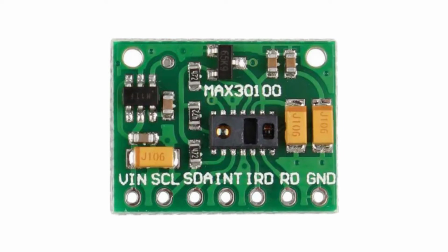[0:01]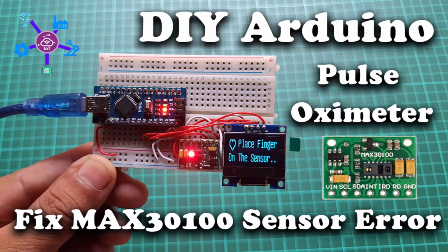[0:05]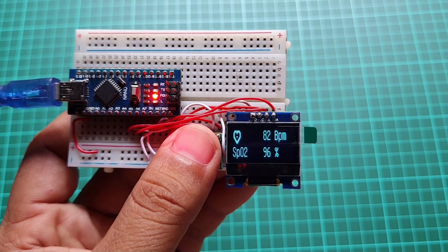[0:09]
Today in this video, we are going to fix the MAX30100 sensor issue and learn to DIY a pulse oximeter using Arduino.
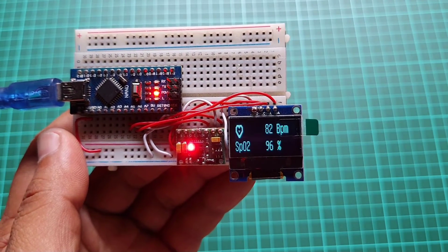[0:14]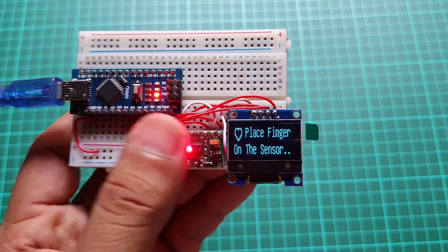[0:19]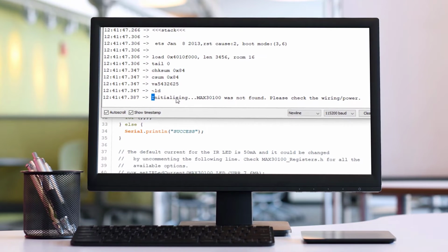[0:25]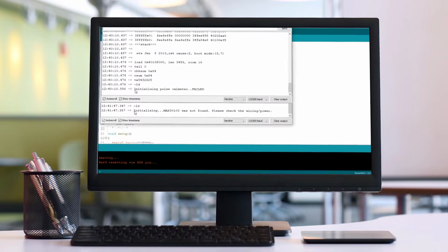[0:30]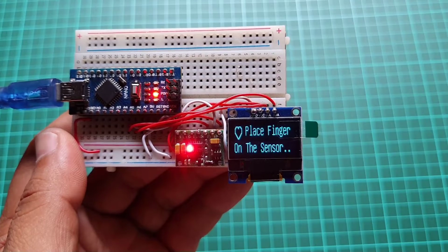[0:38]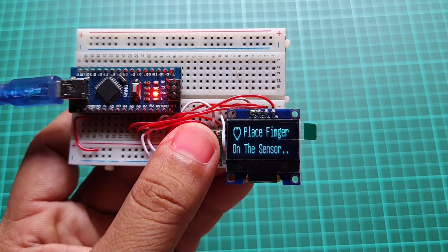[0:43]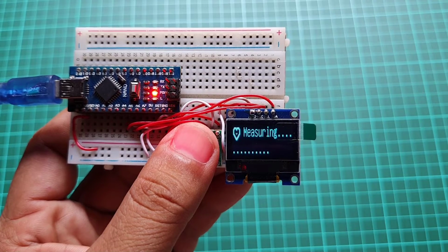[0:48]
You might have faced no red LED light working even after following proper pin connection and program code. Or you might have faced "Initializing pulse oximeter failed" or "Initializing MAX30100 sensor was not found. Please check the wiring or power." If you see these errors on your serial monitor and want to learn how to fix them, then you are at the right place. So here we are going to fix MAX30100 sensor issues and DIY a pulse oximeter using an Arduino microcontroller.
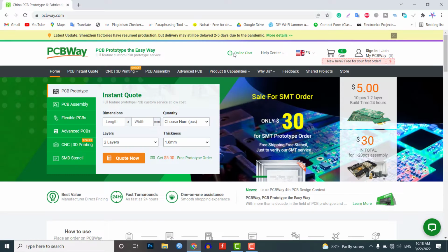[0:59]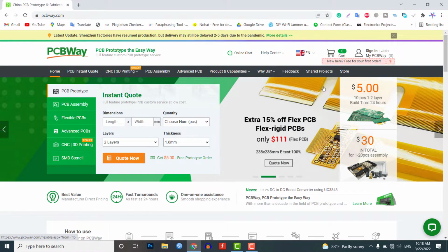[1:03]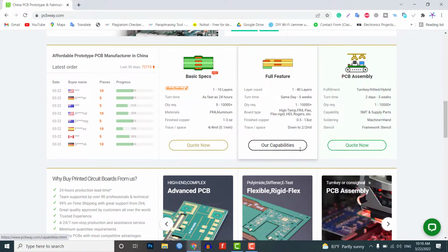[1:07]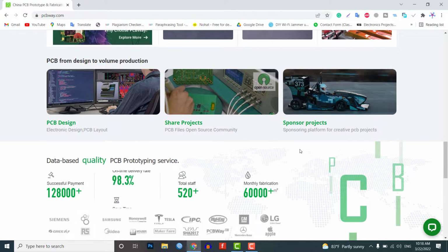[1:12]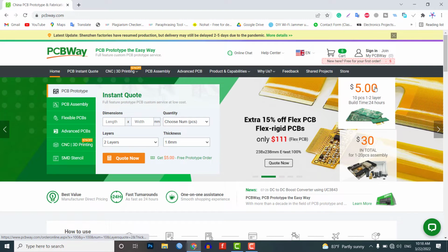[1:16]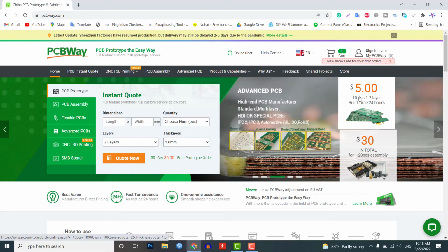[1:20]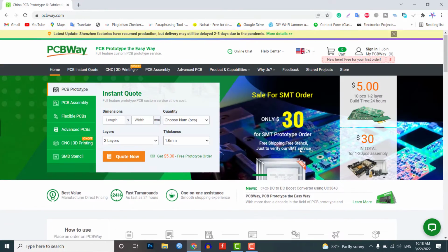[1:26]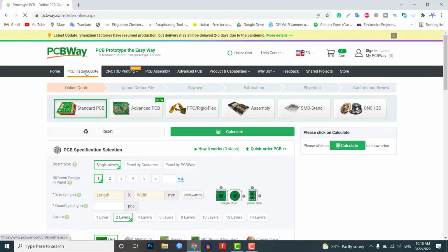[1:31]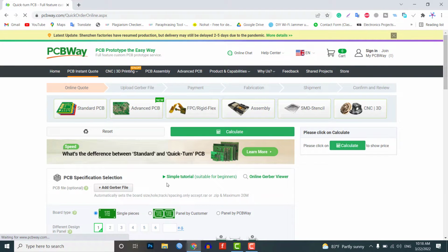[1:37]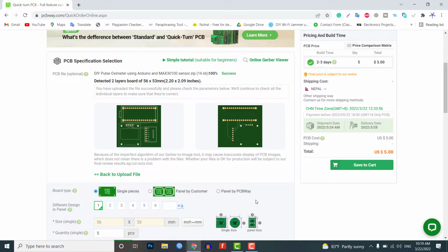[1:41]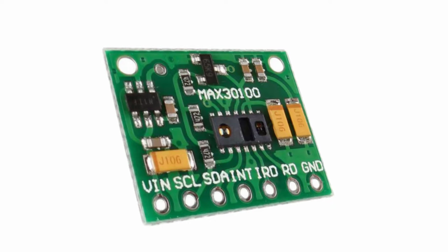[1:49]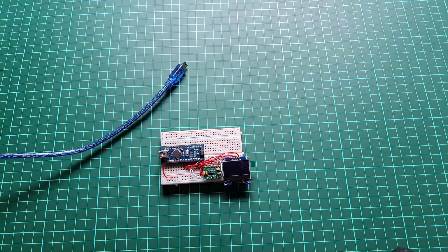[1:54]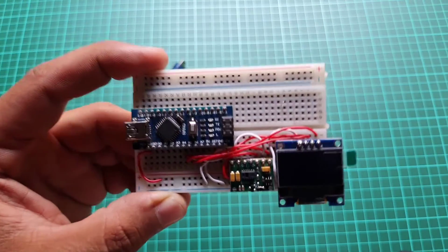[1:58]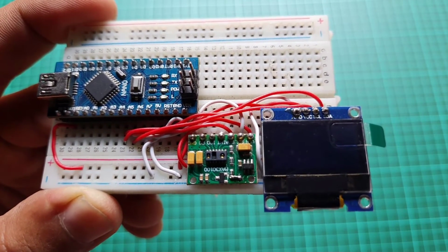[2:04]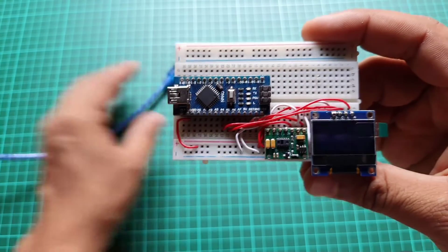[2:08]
So without any further delay, let's dive into this project. There is no issue with the code and Arduino pin connection. I'm sure you have already verified the MAX30100 pin connection with Arduino and they are in proper order. You also might have tried different example code. So there is a small build problem with the MAX30100 sensor PCB.
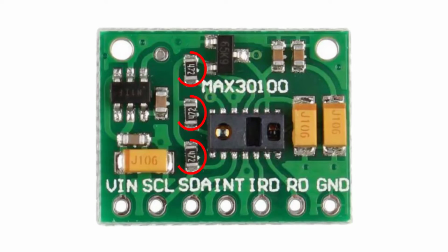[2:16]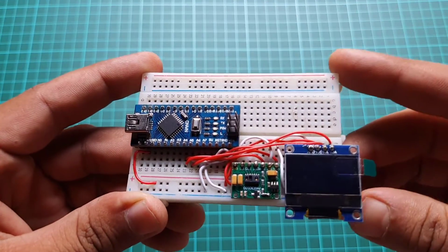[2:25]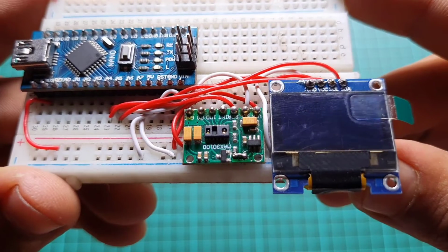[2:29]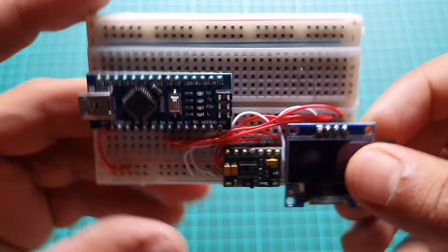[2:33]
If you look closely at the board, you will see three pull-up resistors connected to the 1.8 volt pin of the voltage regulator for a pull-up. But our microcontrollers are 5 volt or 3.3 volt based. So these pull-up resistors are making the SDA and SCL data lines neither pull-up nor pull-down.
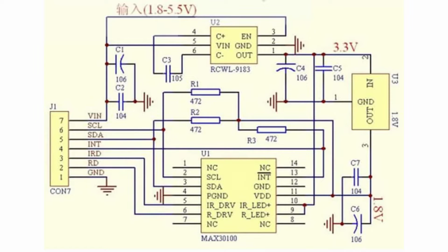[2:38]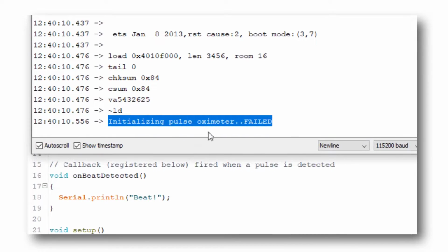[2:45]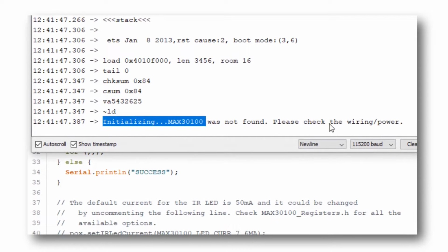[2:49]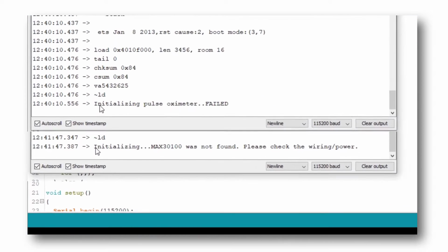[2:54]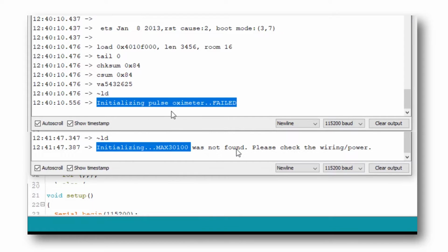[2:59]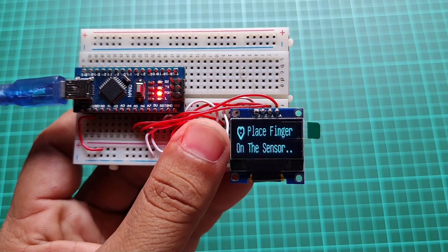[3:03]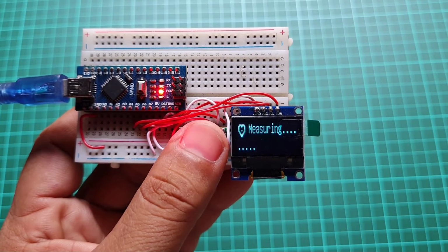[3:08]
Because of this connection, the data which is sent from the sensor to the microcontroller is corrupted and we are getting error responses like "Initializing pulse oximeter failed" and "Initializing MAX30100 was not found. Please check the wiring or power." It happens because the sensor can't communicate with the microcontroller. It will never receive a command to read the pulse and oxygen level, so the red LED will never glow.
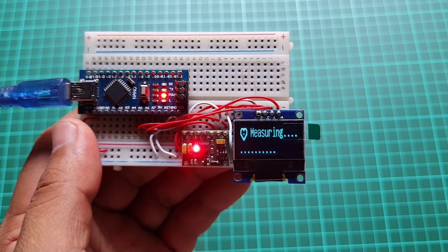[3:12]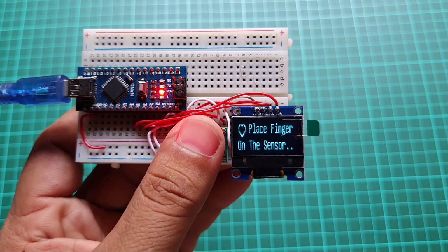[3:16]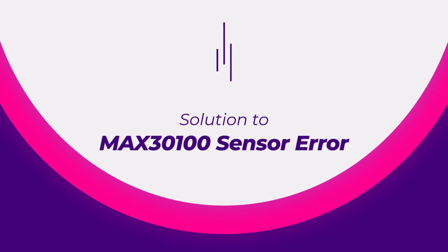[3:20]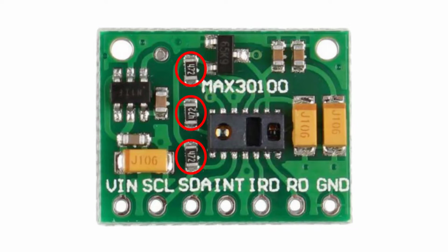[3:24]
Now I think you understood the real problem. So what should be the solution for this? Well, the solution is very simple. We just need to connect these pull-up resistors to the 3.3 volt network and there are two methods to do this.
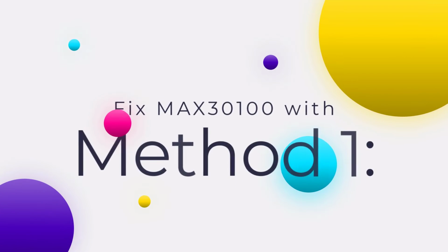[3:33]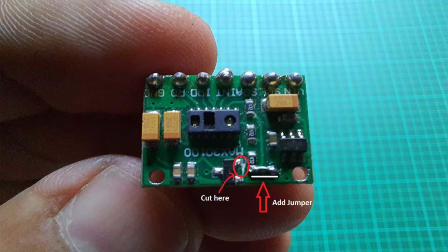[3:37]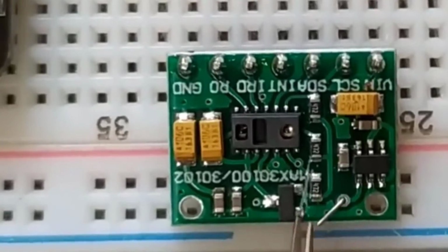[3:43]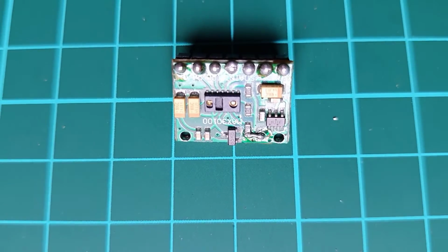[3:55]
In the first method, we just need to cut the line where the pull-up resistor is connected to the 1.8 volt voltage regulator pin and connect this pull-up resistor with the 3.3 volt pin of the second voltage regulator. And we are going to use a small jumper. You don't have to connect all the resistors because all three resistors are internally connected on the PCB, as you can see here clearly.
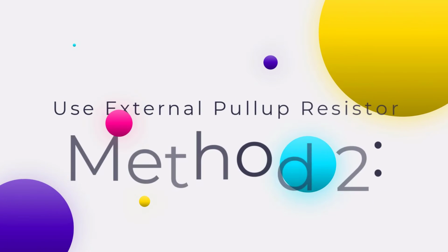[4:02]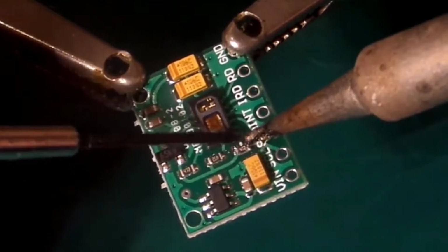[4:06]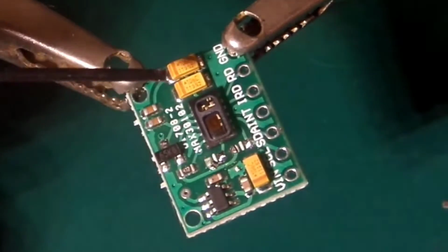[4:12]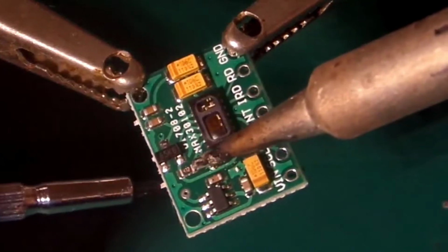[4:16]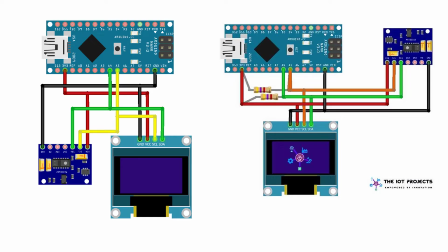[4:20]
In the second method, you simply remove these three resistors and connect an external 4.7 kilo ohm resistor on a breadboard. And you don't have to cut the PCB line here. After successfully completing either of these ways, you can connect to any microcontroller and upload the code to test the system.
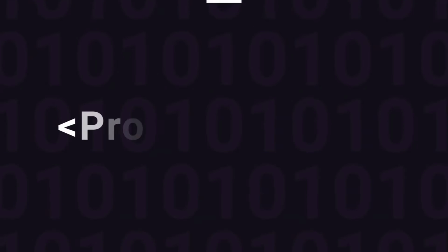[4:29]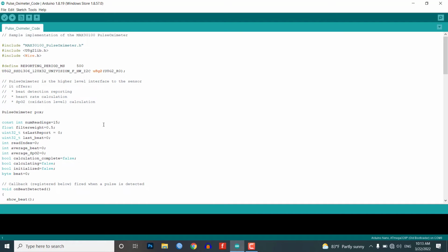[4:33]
This is the program code for a pulse oximeter using Arduino and the MAX30100 sensor. We have used some important libraries in the code. You need to install them in your Arduino IDE. Now simply select the correct board and its COM port from the tools menu and upload the code to your Arduino board.
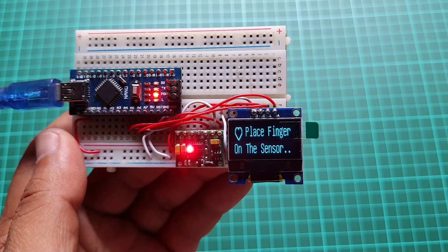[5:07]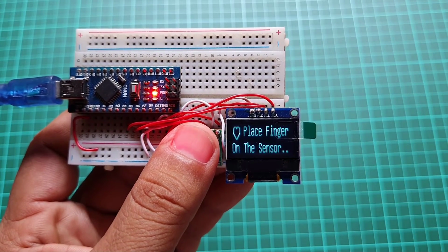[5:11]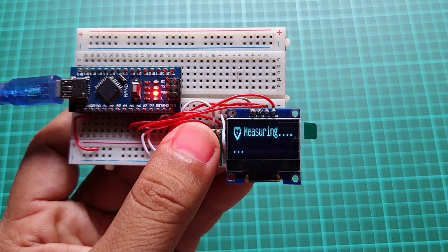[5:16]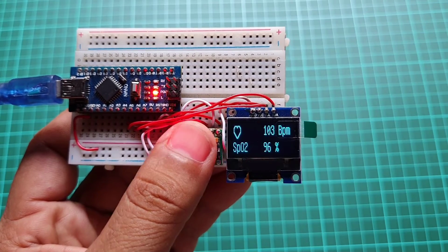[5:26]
After successful upload of this program, it's time to test our freshly built pulse oximeter using Arduino. The circuit is assembled on a small breadboard. It perfectly displays the data on the display. When you place your finger on the sensor, it detects beats and starts measuring the pulse and SpO2 levels. Here you can see my heartbeat rate and SpO2 level in percentage.
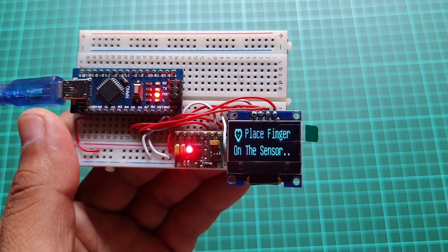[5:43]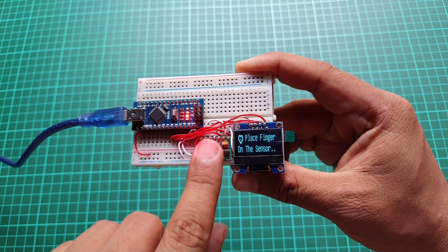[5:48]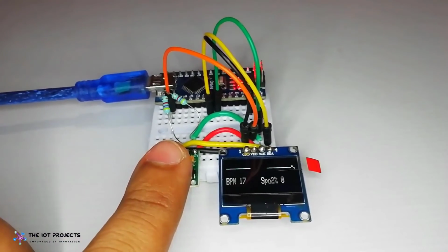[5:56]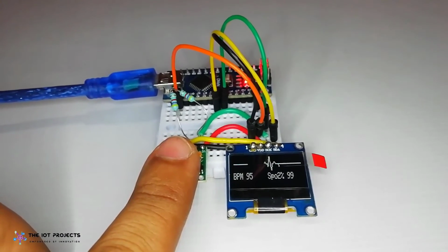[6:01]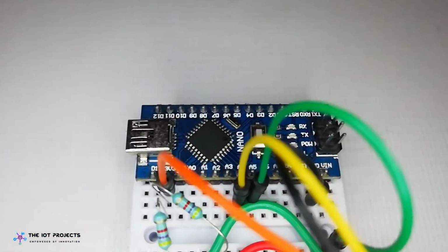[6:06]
When this sensor detects a heartbeat, the little heart animation changes. When the pulse rate is not detected, the OLED screen will tell you to place your finger on the sensor. And when you place your finger on the sensor, it detects your pulse rate and starts measuring the SpO2 levels. I have followed both ways with two different sensors to demonstrate that both sensors are working fine and giving accurate heart rate and SpO2 data seamlessly, as shown here.
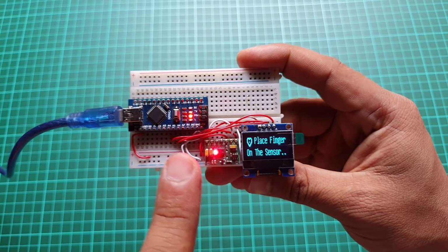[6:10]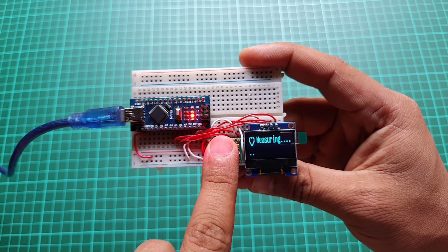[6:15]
So that's all about MAX30100 sensor troubleshooting for you. We have successfully fixed this sensor and built the DIY pulse oximeter project using Arduino. I hope this video helped you to solve your problem.